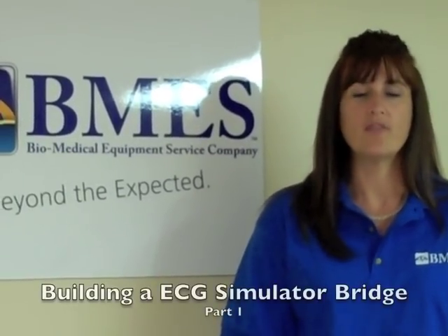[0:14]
In today's video, we're going to show you how to build a bridge, one that when connected to a simulator will allow you to test multiple telemetry units just using this single simulator. I will lay out a list of tools and supplies that you'll need to build this bridge.
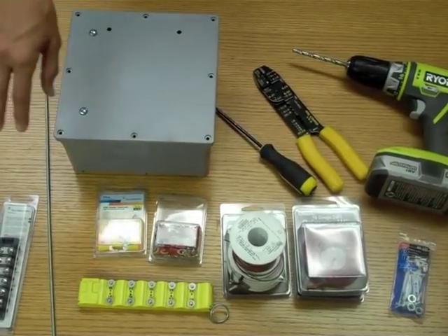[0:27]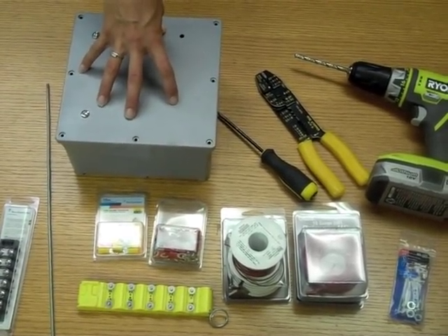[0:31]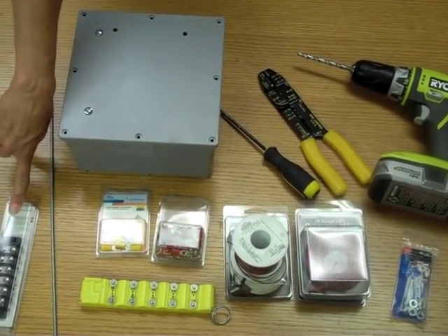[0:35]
Here in front of you, you see a list of all the parts and tools you're going to need to build your simulator slash bridge. Here you have a dual row, six position terminal strip. You will need five of these. A 25-inch rail that will be cut into 20 1-inch pieces.
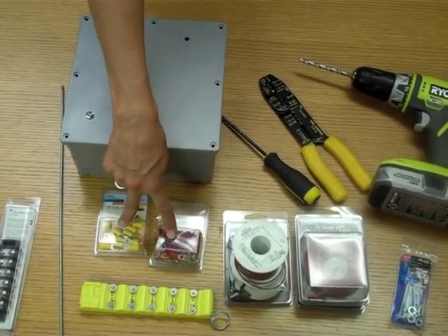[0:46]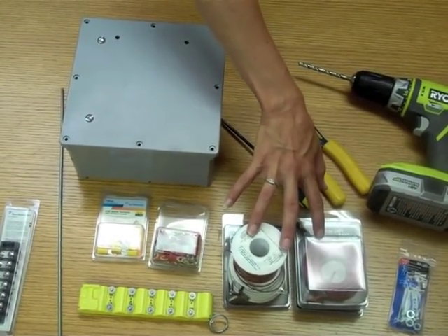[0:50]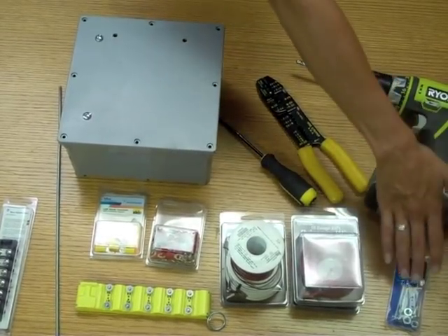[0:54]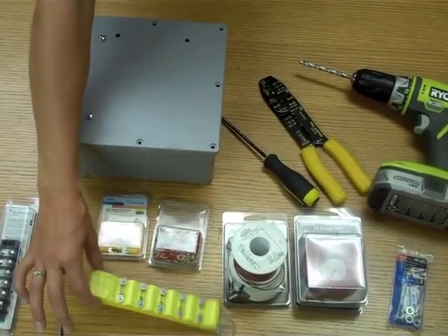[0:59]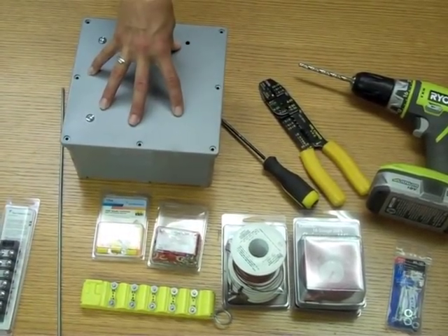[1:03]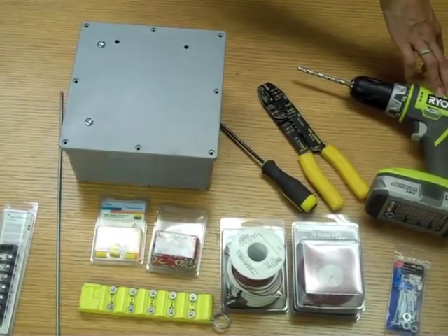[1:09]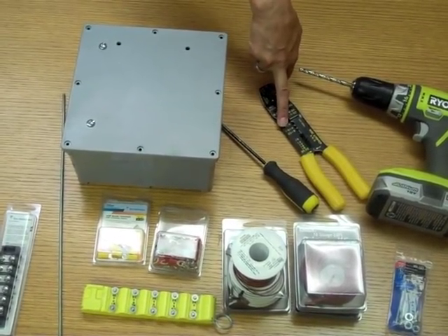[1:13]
25 spade terminals. You will need five rolls of primary wire. Typically, you'd want these in different colors. You need eight machine screws and nuts. You're going to need one simulator to be able to put inside this non-metallic enclosure, which will contain the bridge you're going to build. Over here, you have the tools required, which will be an electric drill, wire cutters, and a screwdriver.
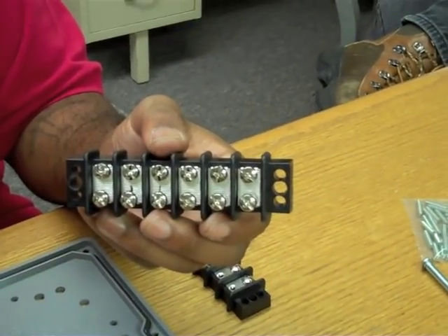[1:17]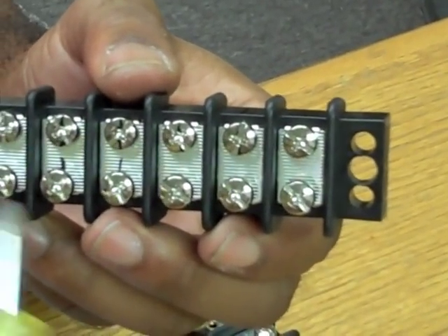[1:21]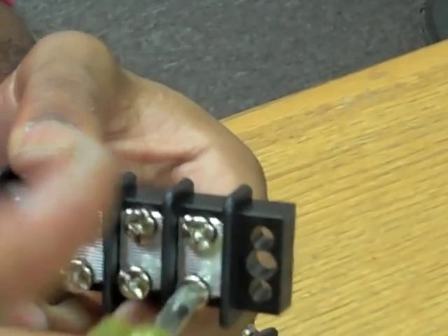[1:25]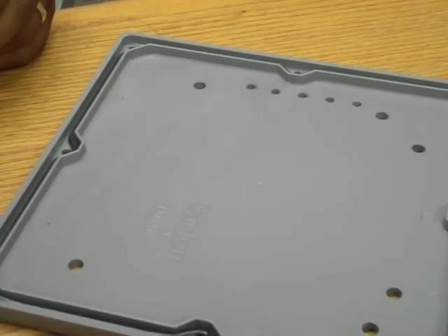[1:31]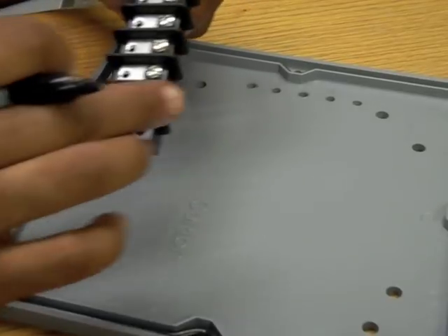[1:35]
Before the construction of your bridge, remove the screws from one side of all four of your terminal strips. To begin construction of your bridge, use the terminal strip as your guide. Mark the two mounting bolt hole locations.
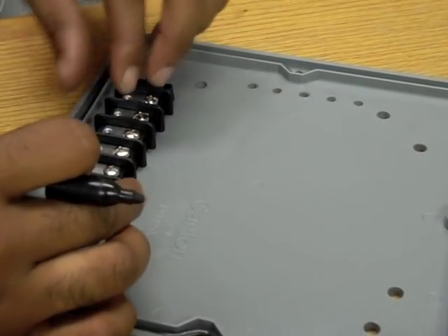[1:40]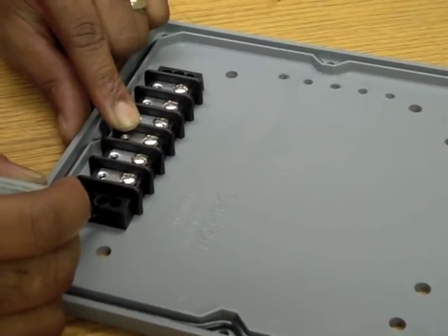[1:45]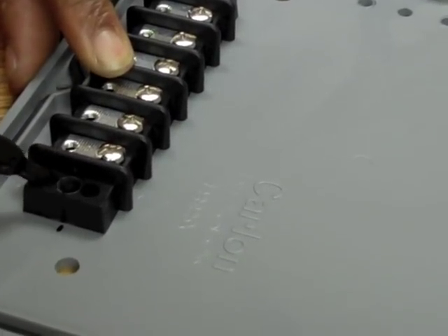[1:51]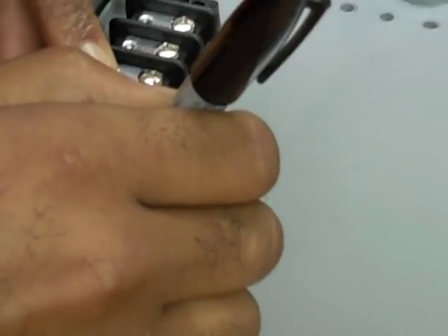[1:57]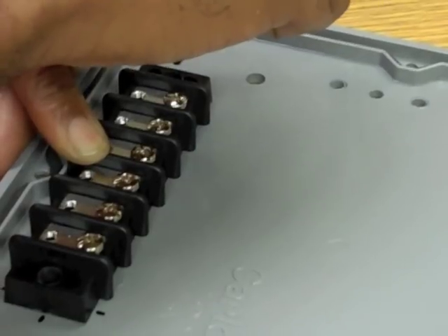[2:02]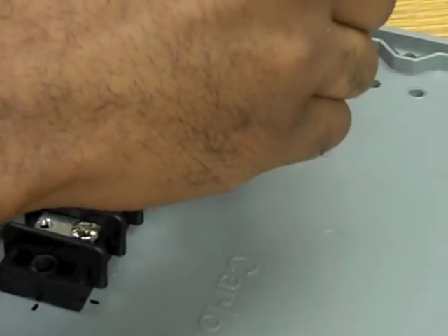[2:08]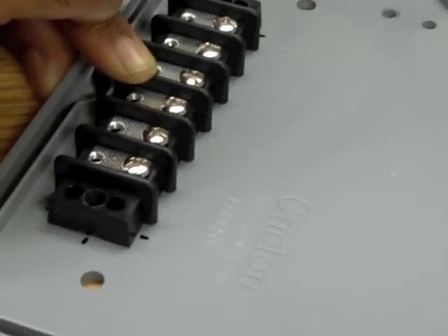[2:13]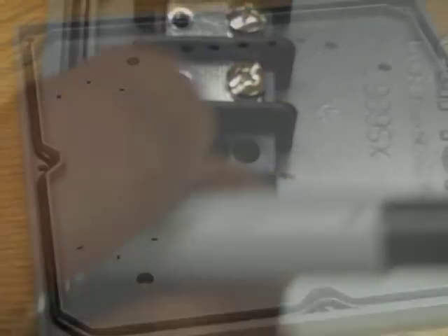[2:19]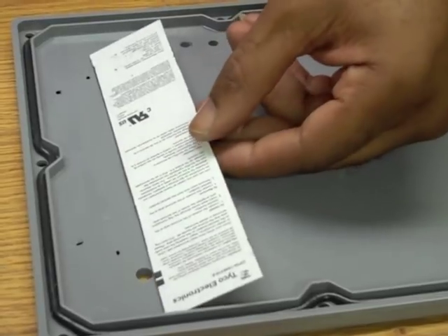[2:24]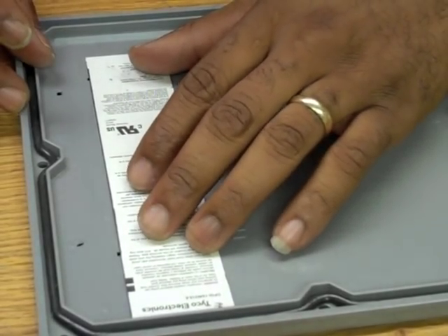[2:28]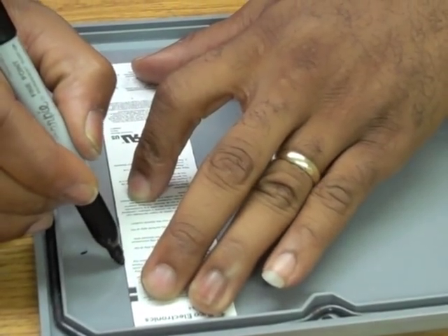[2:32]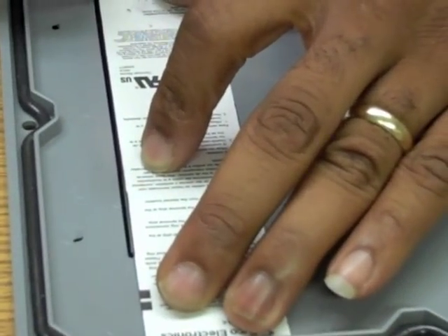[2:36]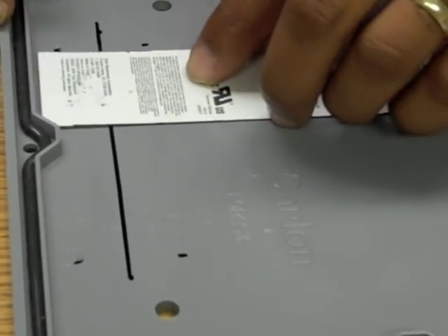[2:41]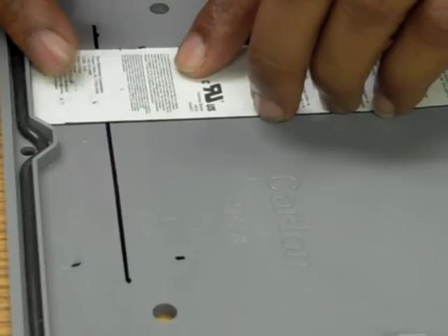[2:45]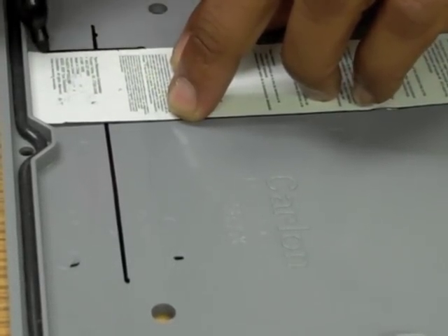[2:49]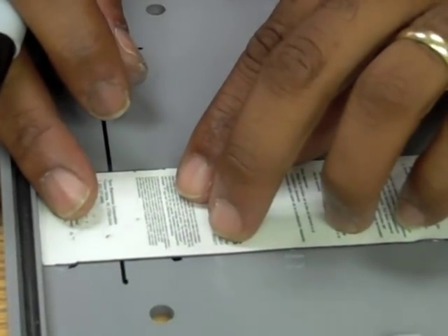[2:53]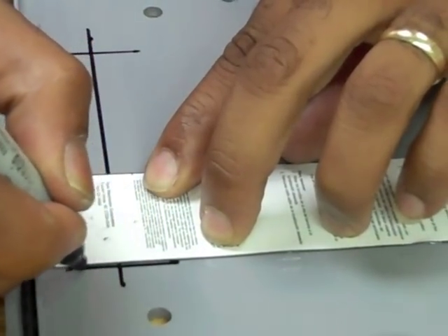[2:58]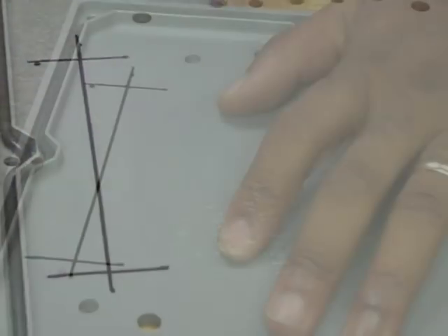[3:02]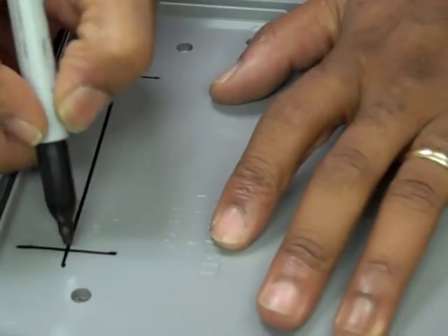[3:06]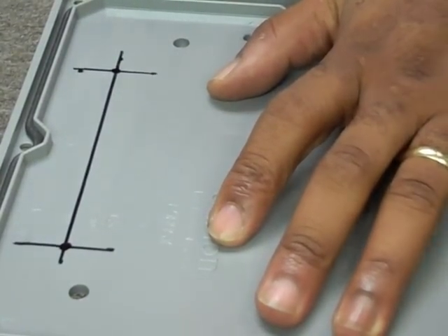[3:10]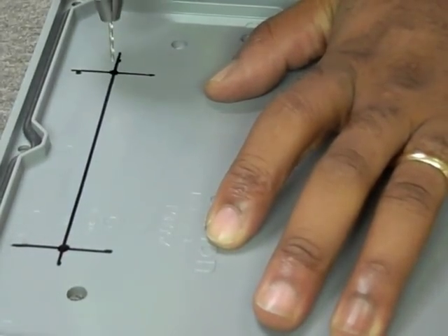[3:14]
Using a straight edge and the marks you just made, draw intersecting lines to mark the exact locations for the mounting bolt holes. Now that the locations are marked, you can drill the holes. We recommend using a small bit first to drill a guide hole, then a larger bit to finish the hole.
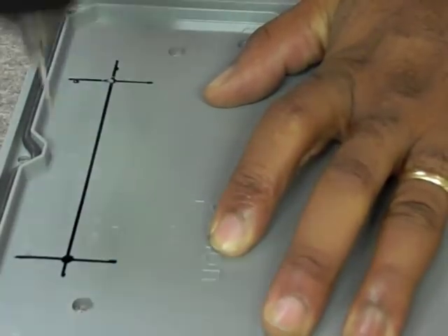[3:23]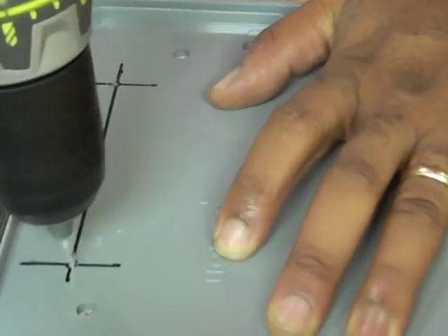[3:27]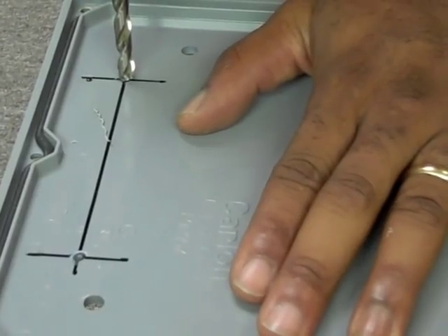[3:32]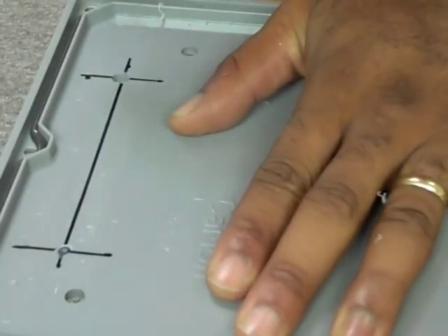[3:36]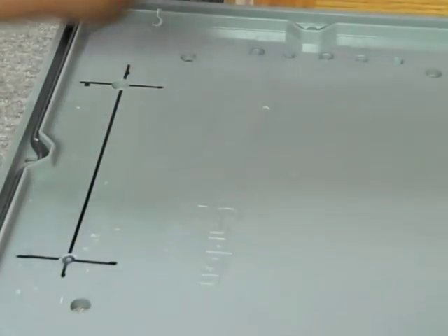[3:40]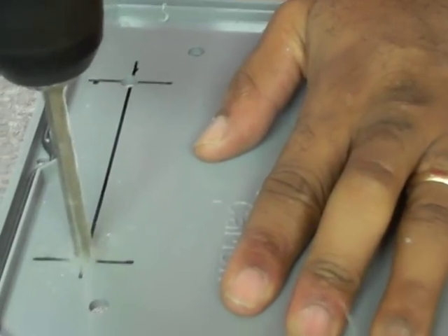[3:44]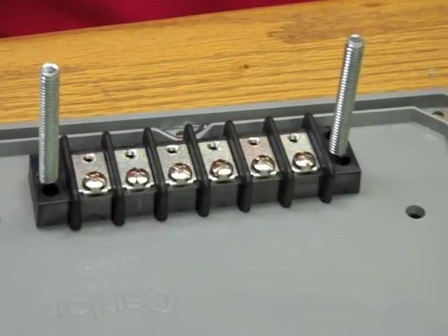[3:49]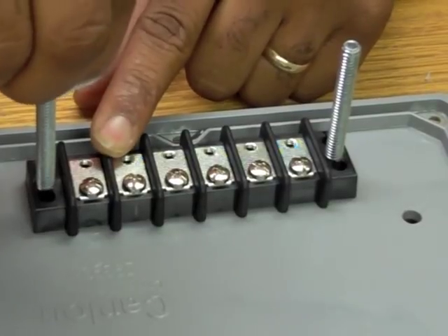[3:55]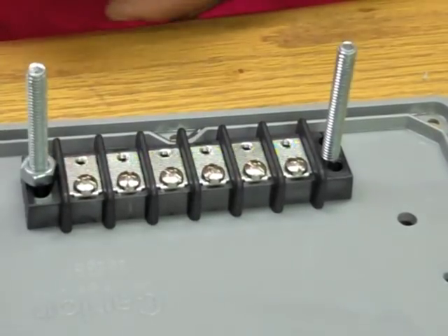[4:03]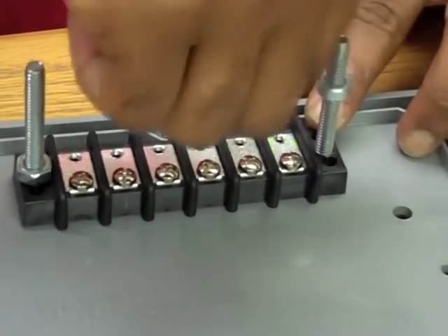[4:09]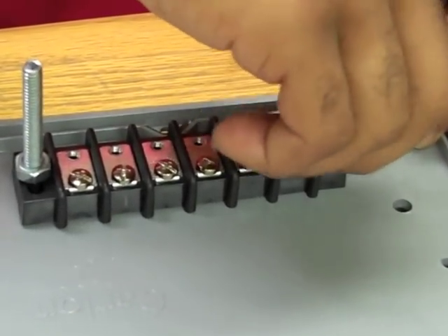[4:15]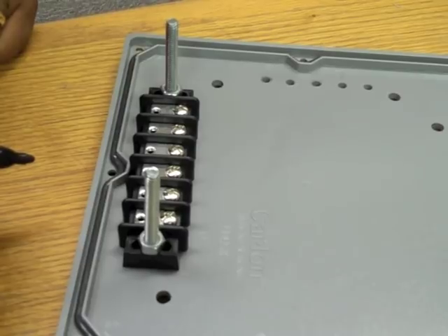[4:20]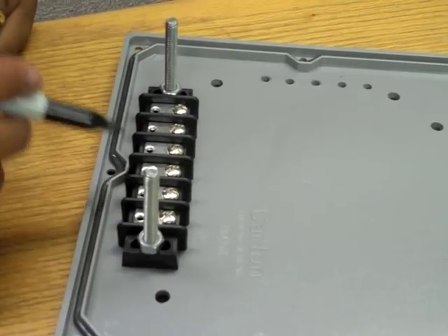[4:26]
Using machine screws, mount the terminal strip on the underside of the case and then attach the bolts. Using the mounted terminal strip as a guide, mark the five lead post hole locations. Once you have all of these marks made, you'll want to remove the terminal strip.
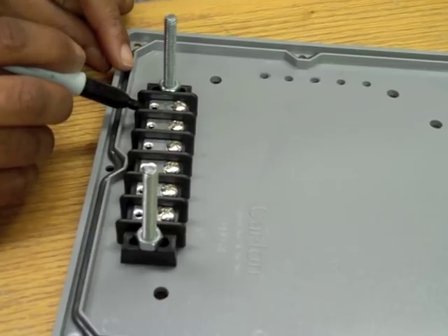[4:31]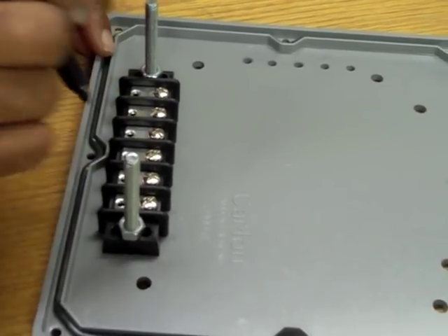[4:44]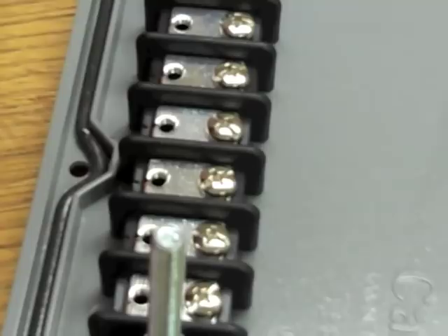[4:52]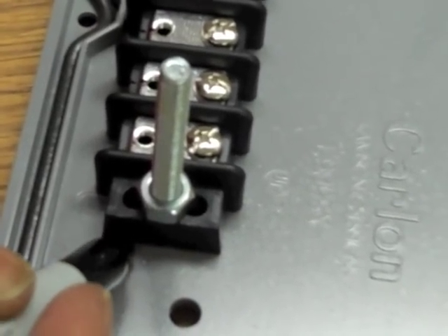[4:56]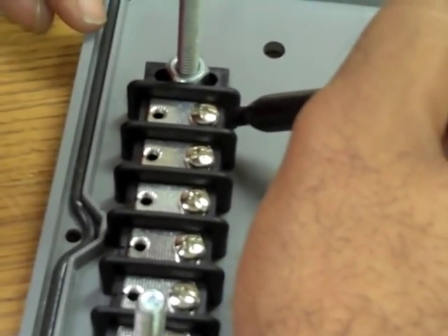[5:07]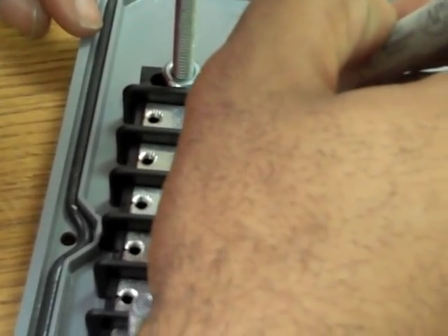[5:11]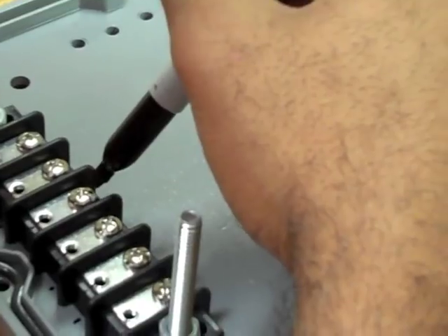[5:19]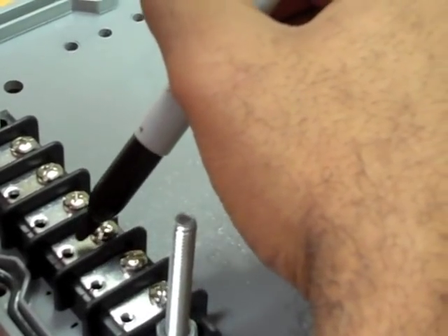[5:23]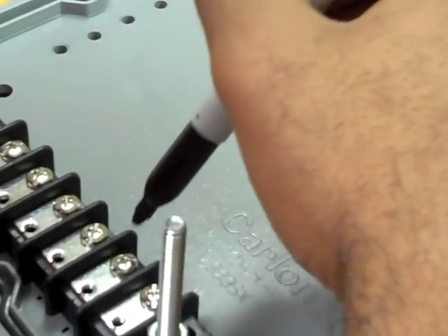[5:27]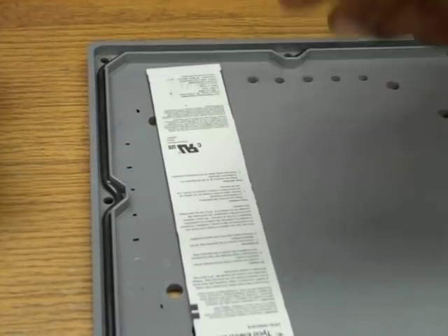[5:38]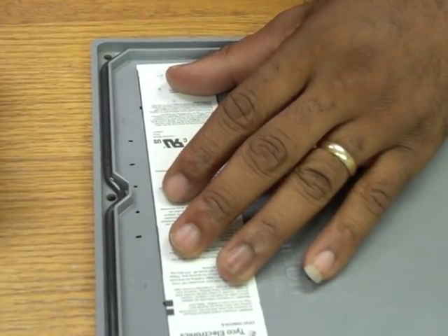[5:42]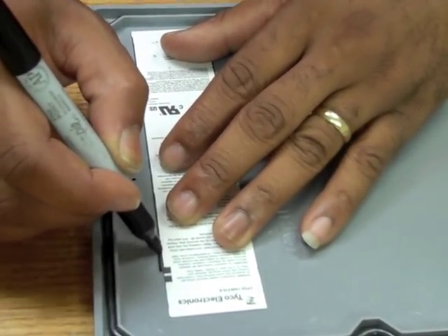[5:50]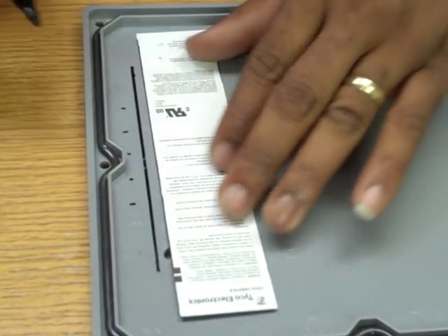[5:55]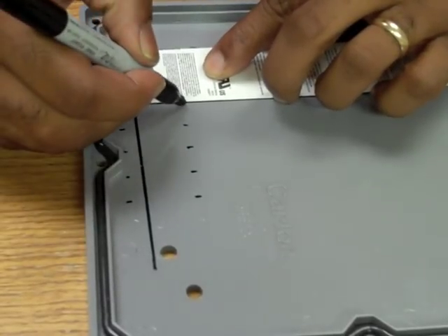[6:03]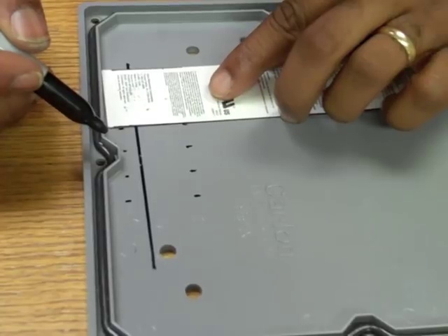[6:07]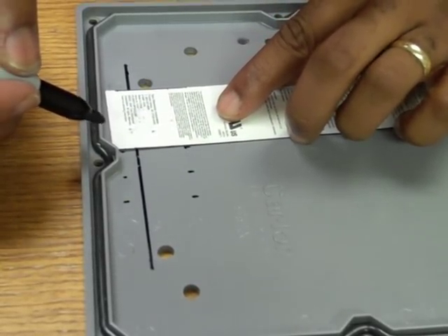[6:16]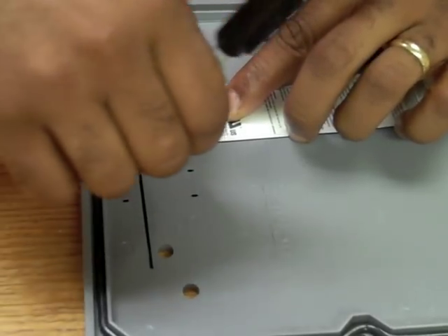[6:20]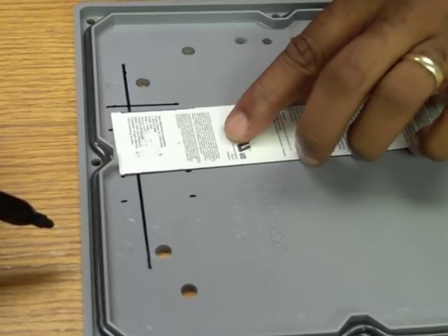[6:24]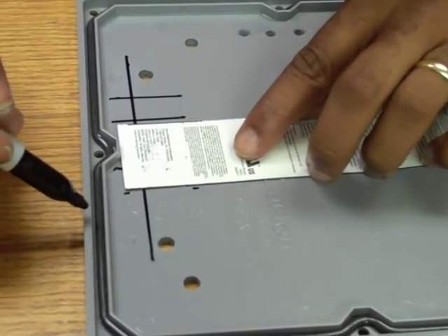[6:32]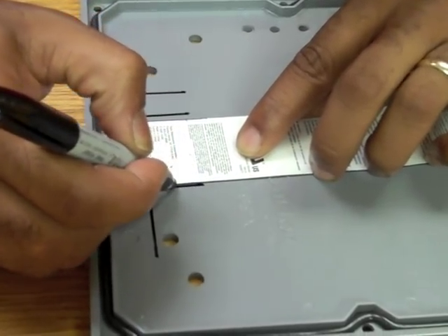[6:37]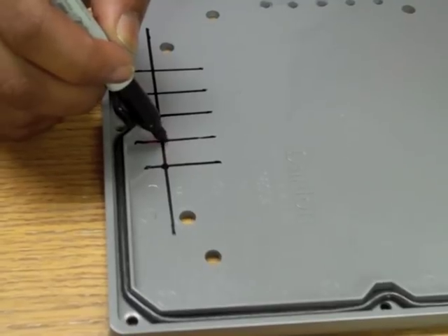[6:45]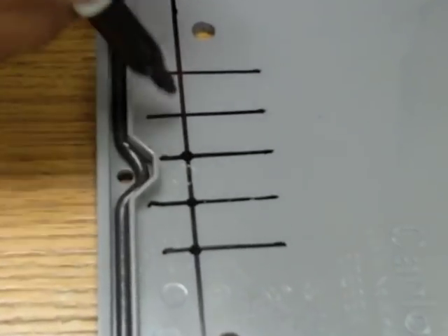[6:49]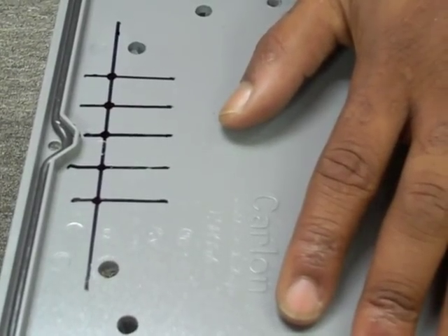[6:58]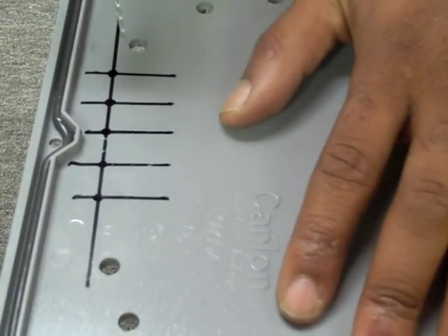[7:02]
After removing your terminal strips, once again, using a straight edge and the marks you just made, draw intersecting lines to mark the exact locations for your lead post holes. Now that the locations are marked, you can drill the holes. Once again, we recommend using a small bit first to drill a guide hole, then a slightly larger bit to finish.
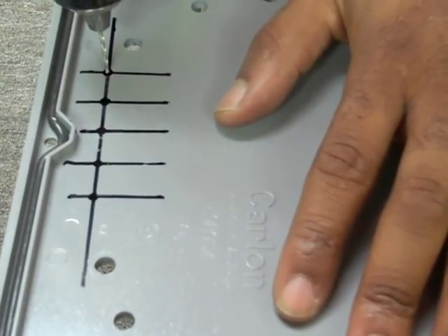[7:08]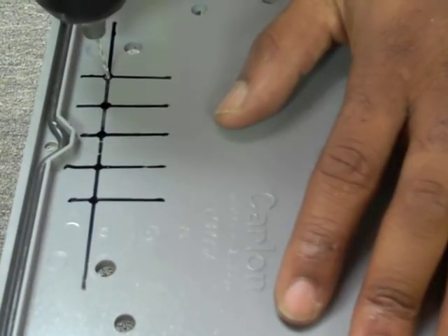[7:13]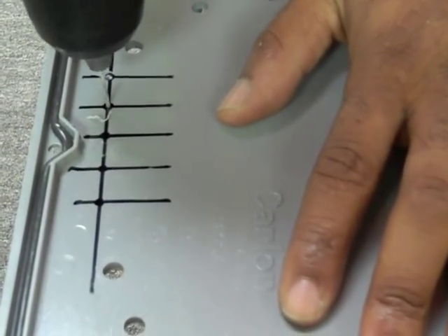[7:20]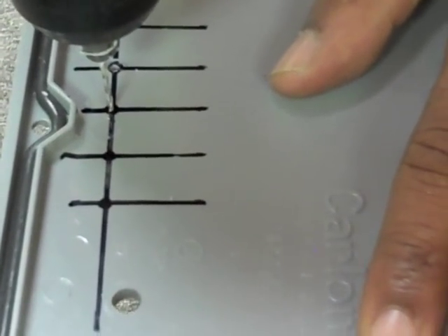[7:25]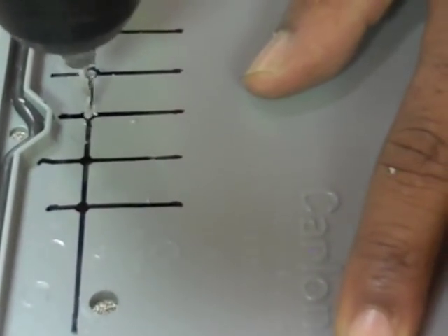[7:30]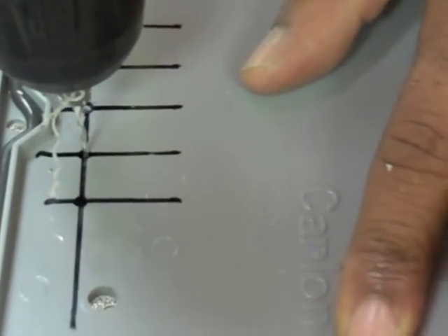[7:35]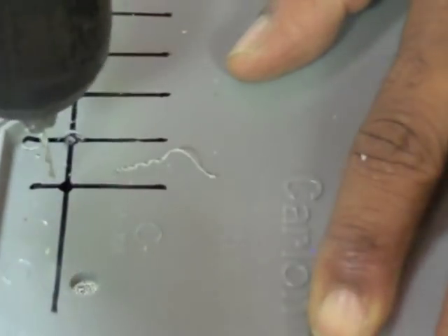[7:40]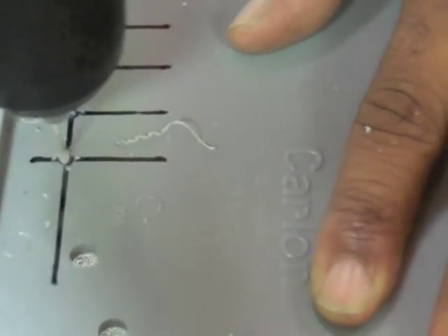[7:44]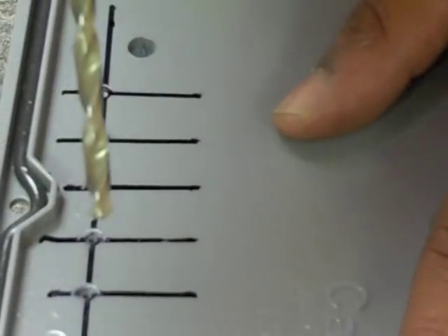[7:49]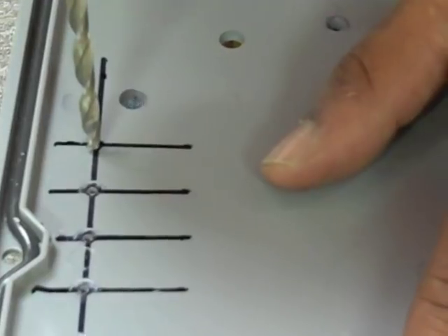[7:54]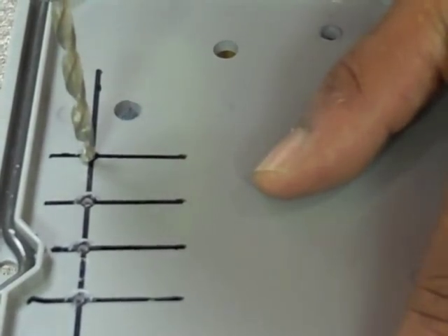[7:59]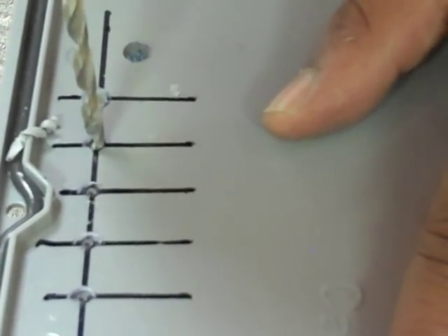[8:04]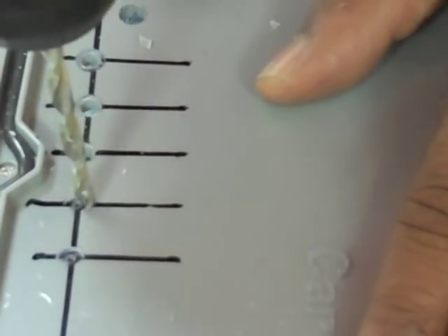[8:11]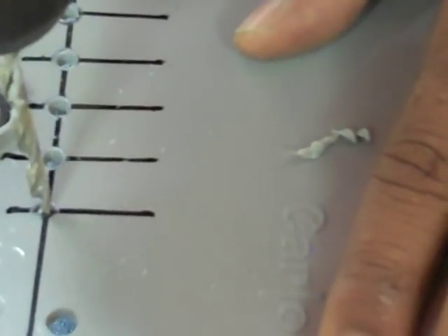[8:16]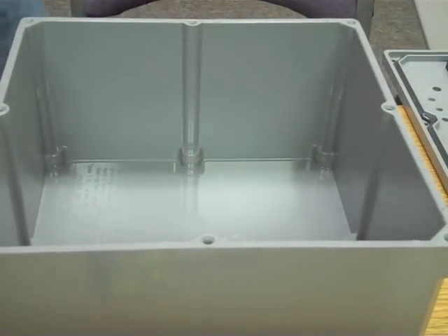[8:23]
Next step is drilling a hole in the side of your case.